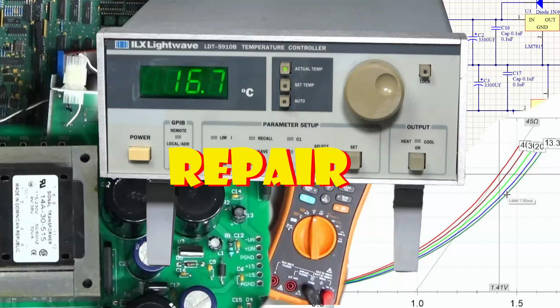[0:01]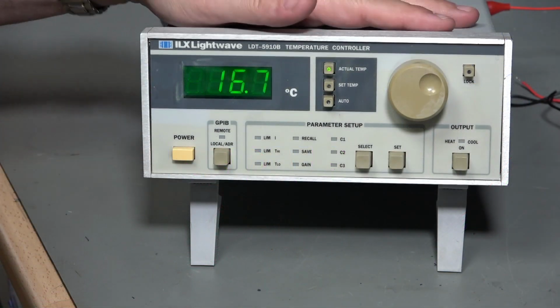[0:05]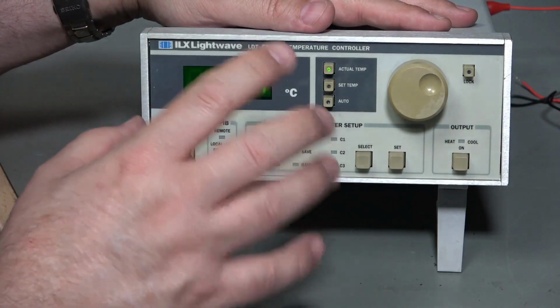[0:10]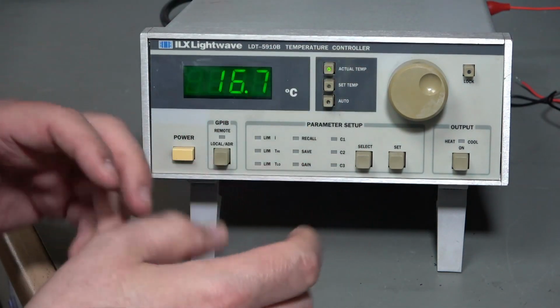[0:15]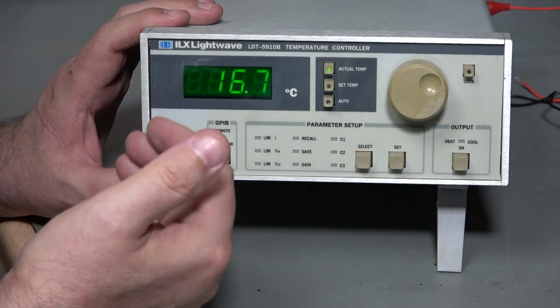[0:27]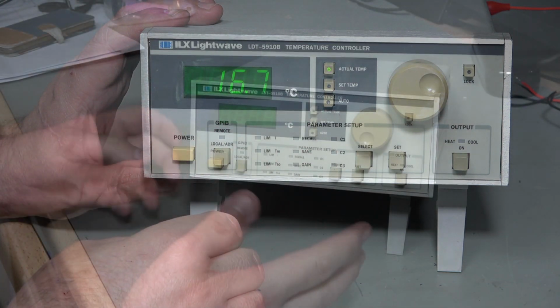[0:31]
This is the Thermo-electric Temperature controller that I opened in a recent mailbag video. As you can see, it's an ILX Lightwave LDT 5910B. So the idea is that you will have some lab equipment generating heat, maybe a laser diode or something like that, and you use this as a cooler or heater to stabilize the temperature at some set point. I just finished fixing it, and in this video I'm going to show you that repair, and then I'll do a little experiment testing the temperature dependency of a germanium PN junction. So let's get to it.
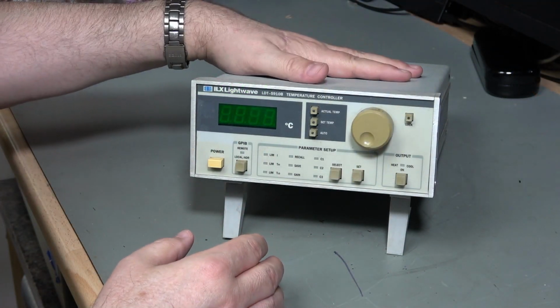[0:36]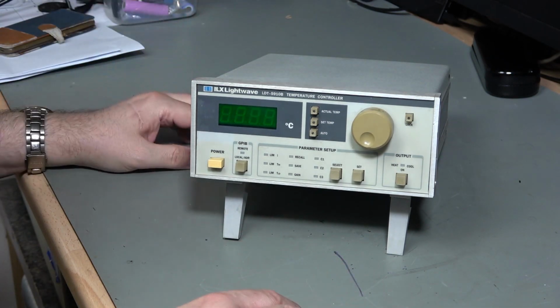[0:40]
Now this is dead on power on, so nothing happens at all. Whether that's because someone's messed around with it or whether it's because it's just a very simple fault, who knows, but we shall dig into it and see what we can find out.
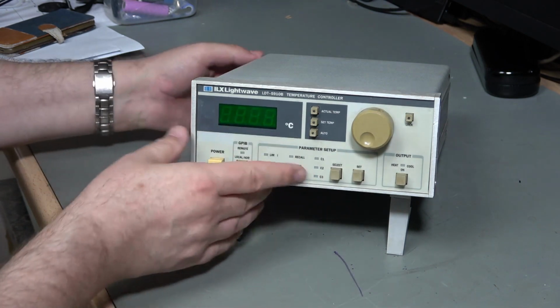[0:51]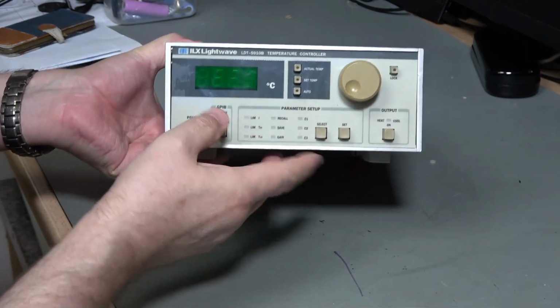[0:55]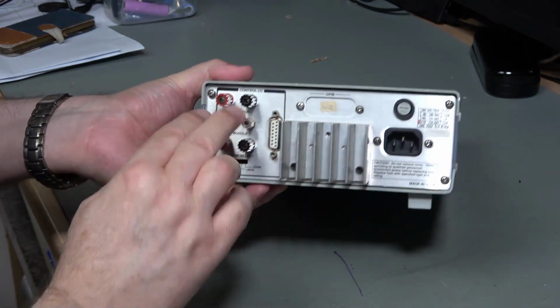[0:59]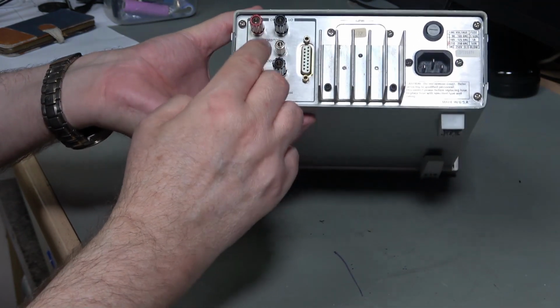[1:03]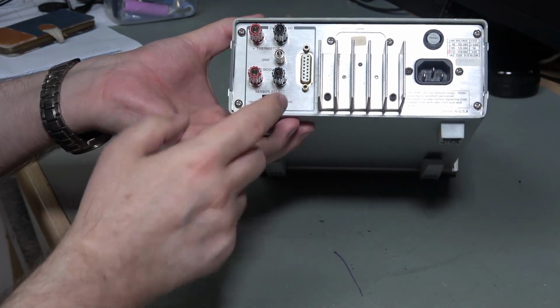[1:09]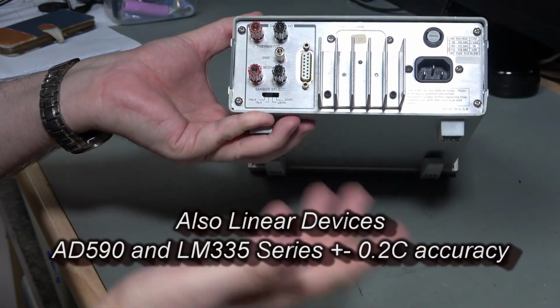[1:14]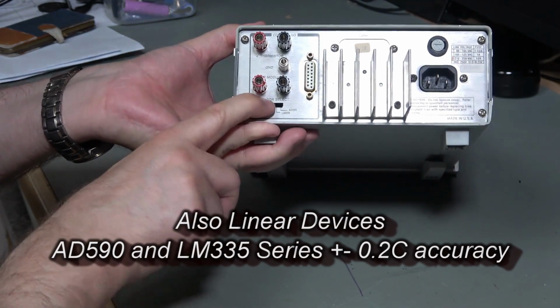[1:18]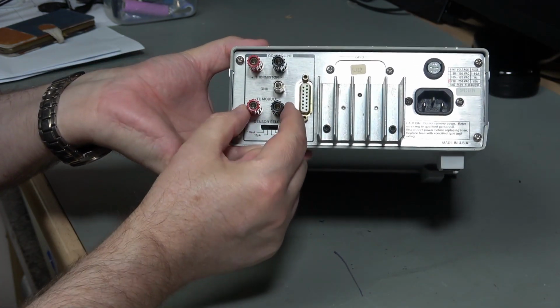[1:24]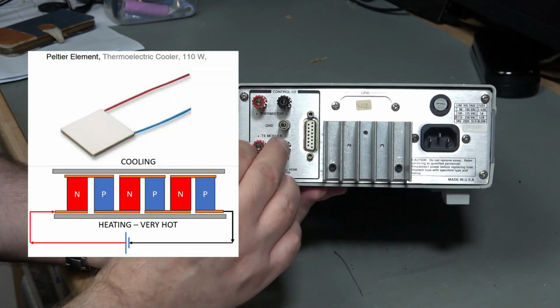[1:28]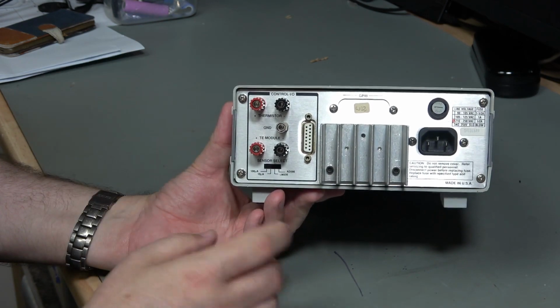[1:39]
The purpose of these really is to control temperature, as it kind of gives away on the lid, and on the back we have a pair of connectors here, or we can use this D connector to connect some sort of thermistor. Now thermistor is non-linear in nature, so an NTC thermistor onto there, and we can connect various sizes of thermistor, so 1K or 10K or 50K, whatever you want. We can control the current that's supplied to that thermistor using a switch here, and just here we've got something called TE module. So this is going to go off to a cooler or heater, so something like a Peltier device, where if you connect the power one way it warms up, if you connect it the other way it cools down, and it will essentially try and manage the temperature.
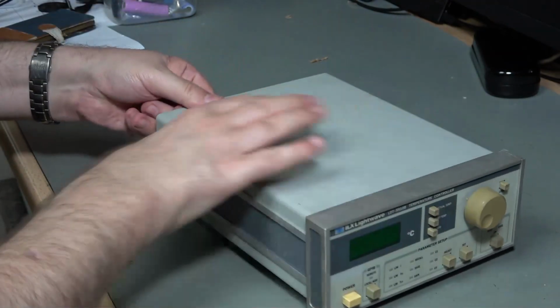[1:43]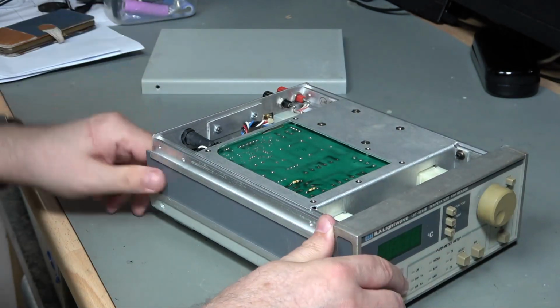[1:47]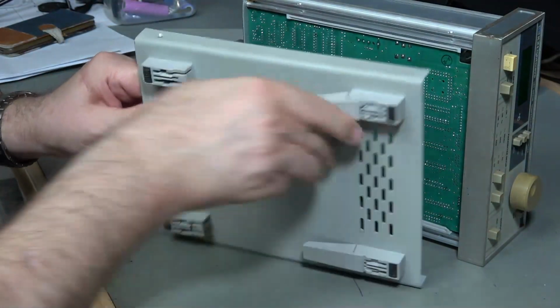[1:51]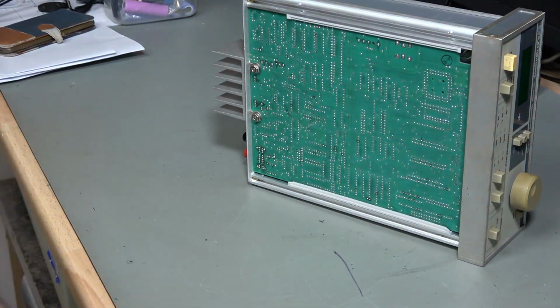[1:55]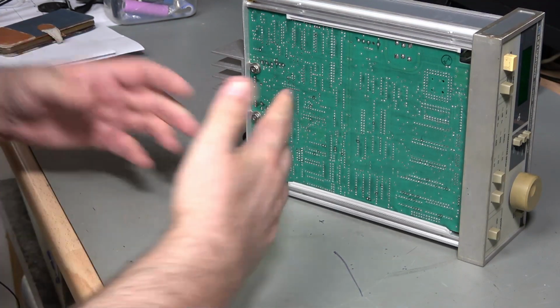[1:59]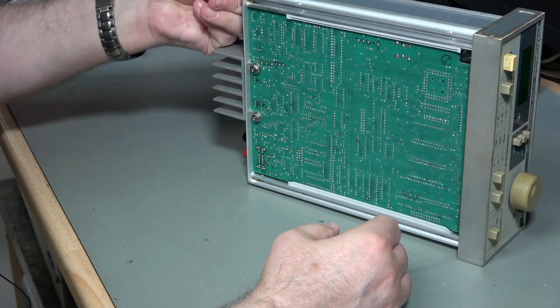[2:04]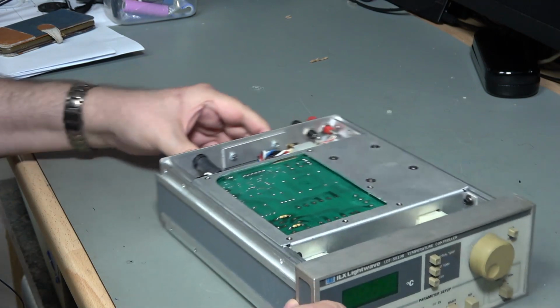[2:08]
So this should now just lever off. Oh, there we go. At the bottom, and yeah, we've got all the tilt feet and everything on here, so this is all good. And there's the bottom end access to our circuit board. Unfortunately, although I can find a user manual for this, service manuals are a different matter, but one thing at a time. Let's see if we can't figure out what's going on.
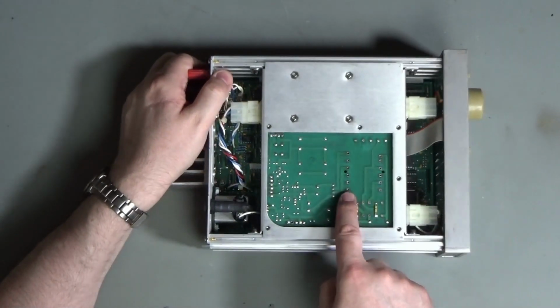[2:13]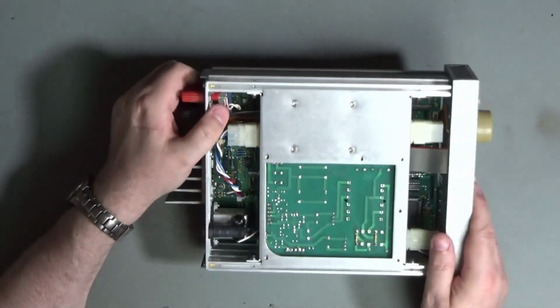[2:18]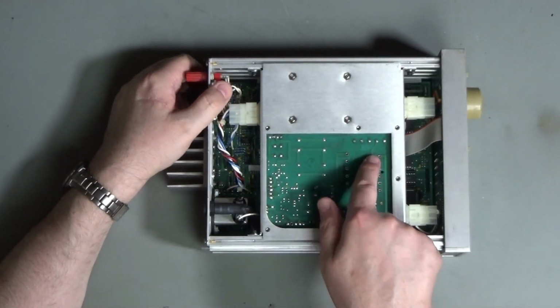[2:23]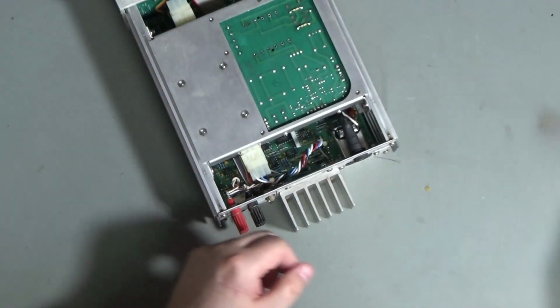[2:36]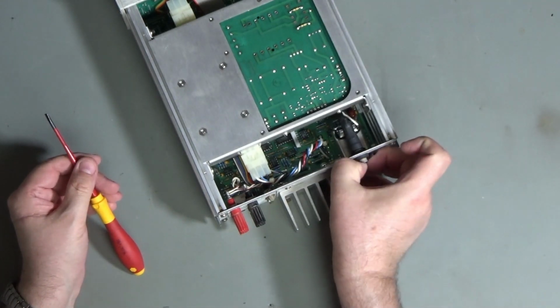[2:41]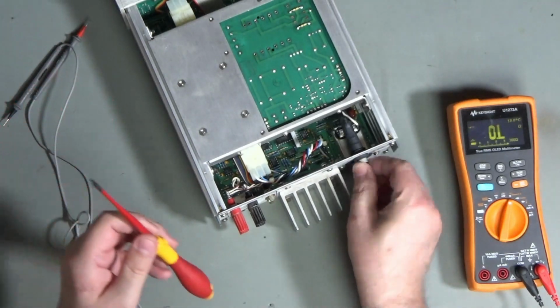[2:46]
And I am slightly concerned that someone may have removed a transformer from it, because I seem to have a lot of empty pads there, and there is some solder residue on them, although they don't look like they're horribly fluxy, but I'm guessing there should be a transformer right there. Oh dear. Okay. So, do I even bother to test very much more before I take that board out? Not really. Let's have a quick look at the fuse. Yeah, so the fuse is okay. So I'll just pop that back in before I lose it.
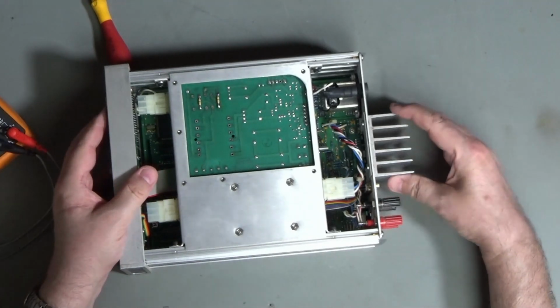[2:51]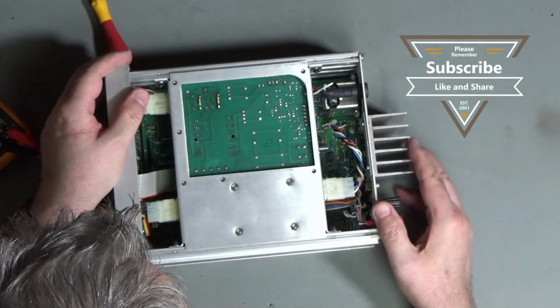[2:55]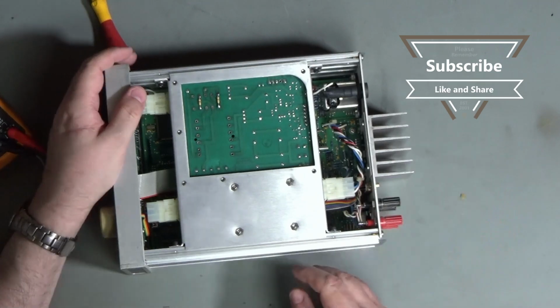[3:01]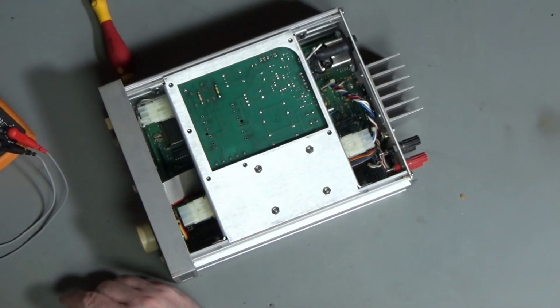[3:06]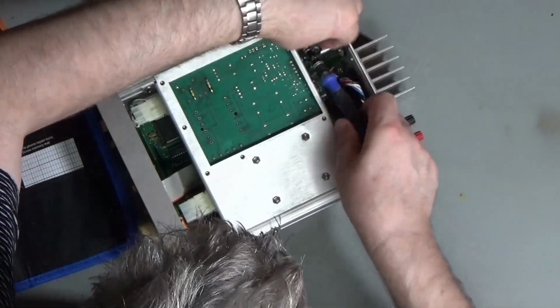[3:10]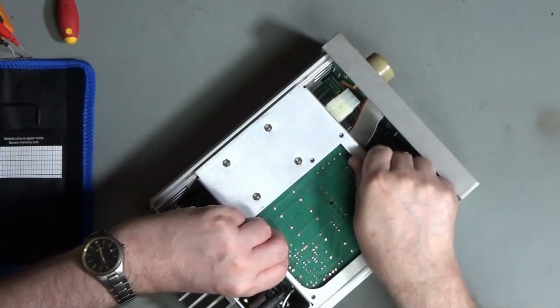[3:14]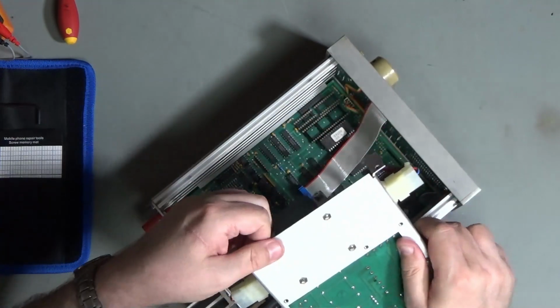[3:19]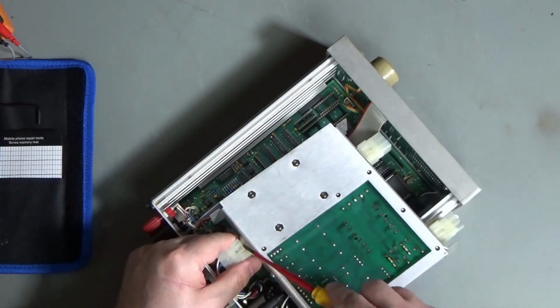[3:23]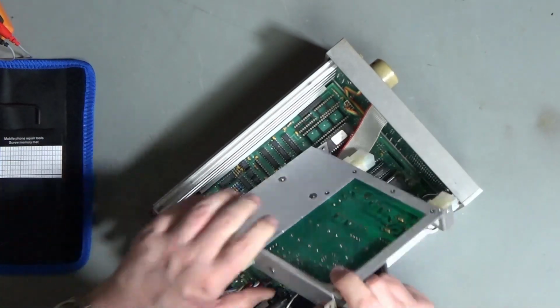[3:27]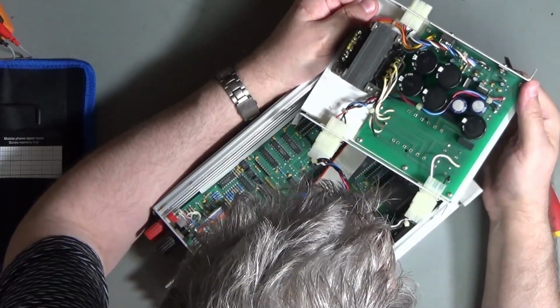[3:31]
Okay, I'm guessing this heat sink's here because this is a current source and it will source several amps. So there'll be some big MOSFETs or possibly Darlingtons on there, and there'll be a pair as well because it's bipolar. Right, let's see if we can't get in here and get these out. Awkward little clip. Okay, and there we have our power supply.
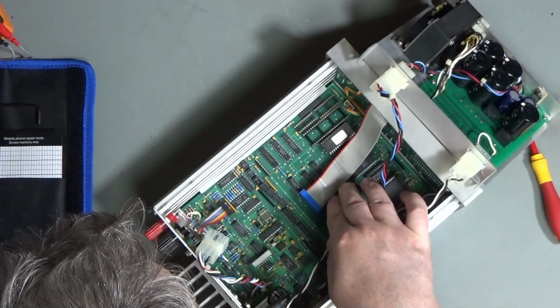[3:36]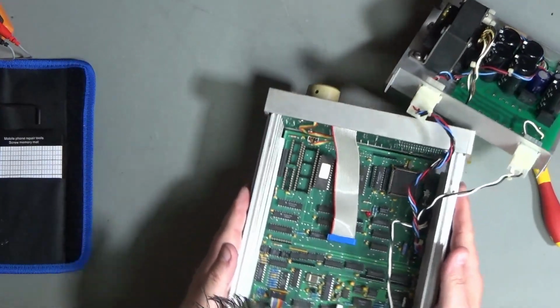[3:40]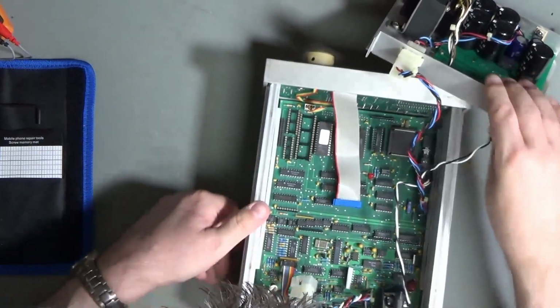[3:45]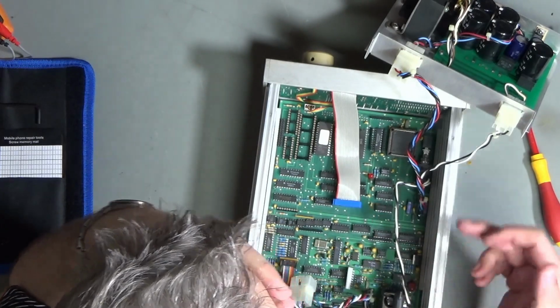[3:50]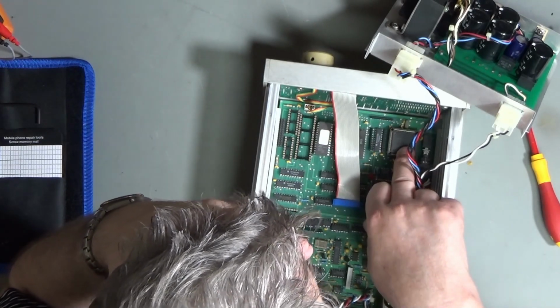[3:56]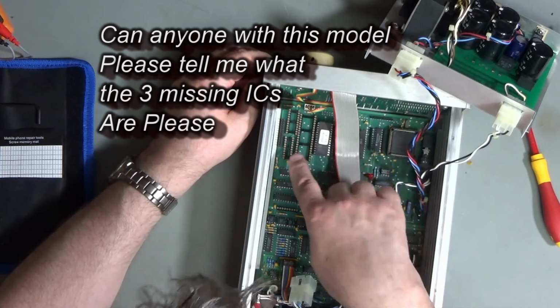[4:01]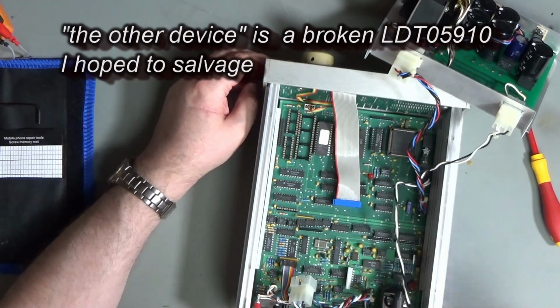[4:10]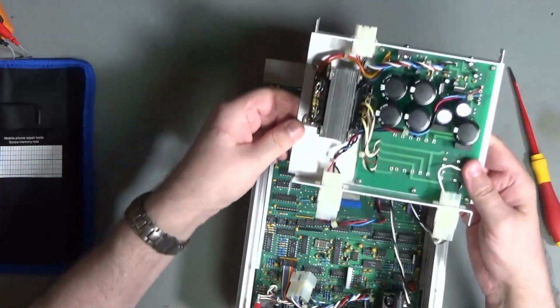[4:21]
So that, I think, is kind of like our analog section with its digital drivers for switching. And then we've got our digital section over here, and we've got our processor here. It's a 80C188 is what it says. We've got 3 missing ICs down here, and I'm kind of hoping they are the GPIB, because the other device has a very large GPIB card, which actually sort of fills half of this case, and clearly that's not meant to go in here along with this power supply.
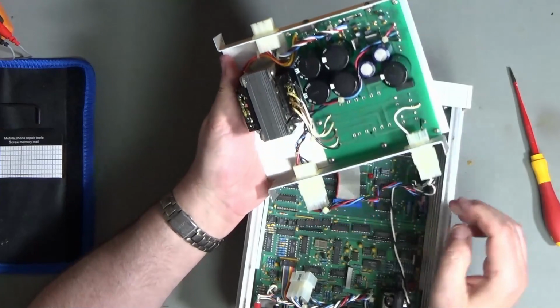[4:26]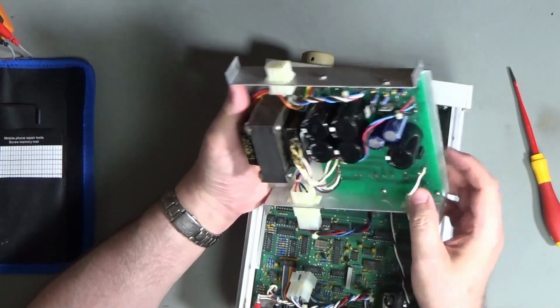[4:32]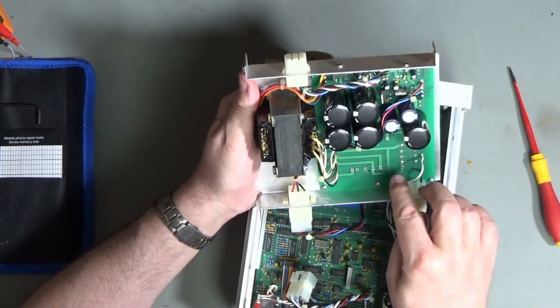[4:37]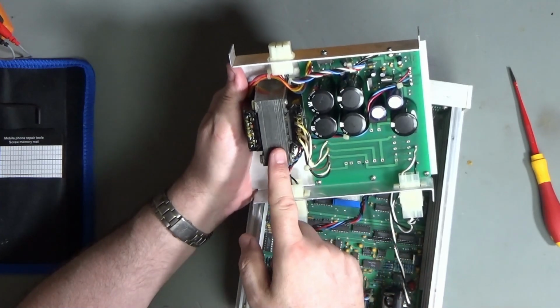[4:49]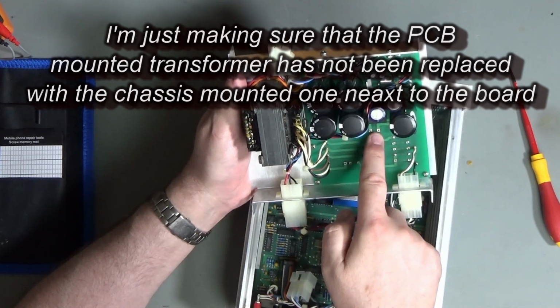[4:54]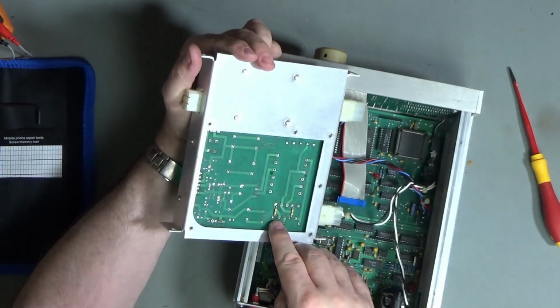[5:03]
Let's take a look at the power supply for just a second. So we've got our mains coming here on the black and white, and I'm assuming that these are supposed to be jumpers. That's a 24120 jumper, and this is a 24220, so that'll give me 240. I think that's how that's supposed to work. It runs through to this transformer here. But we've got an entire transformer section just here. It appears to just be missing completely. Yeah, there are 0 ohm jumpers on the back.
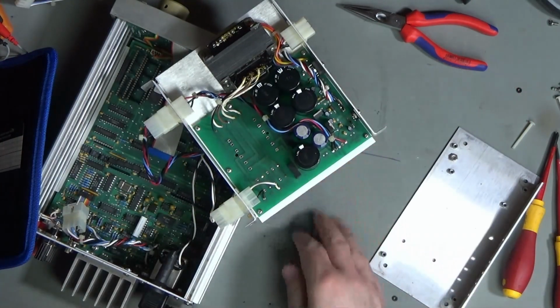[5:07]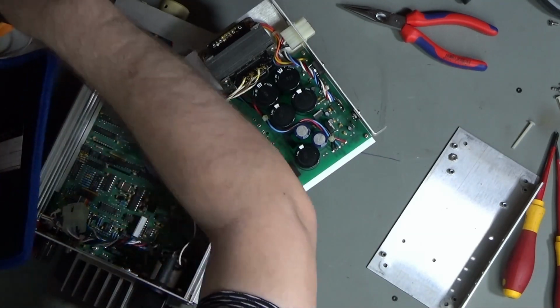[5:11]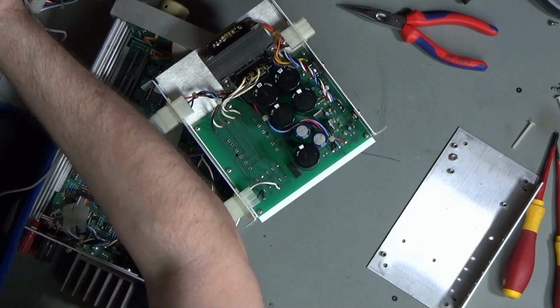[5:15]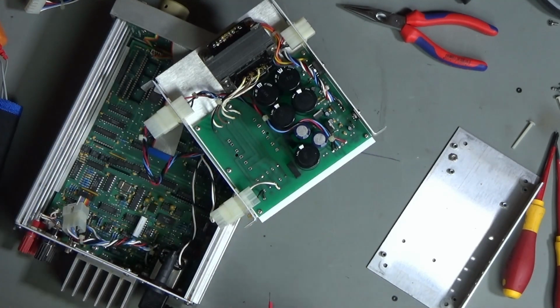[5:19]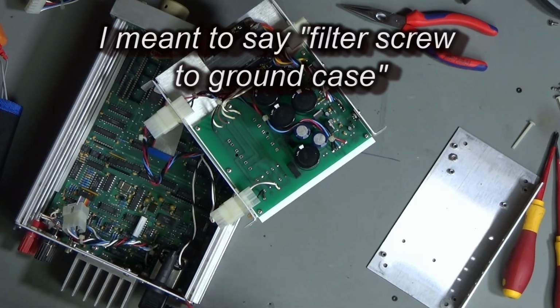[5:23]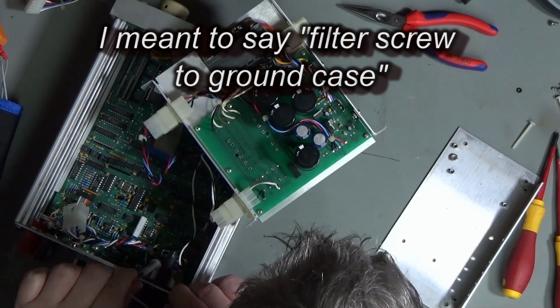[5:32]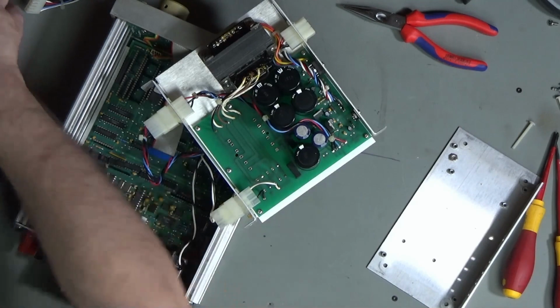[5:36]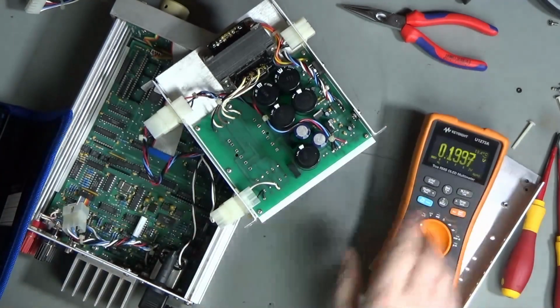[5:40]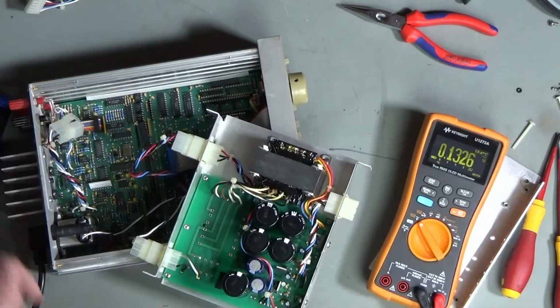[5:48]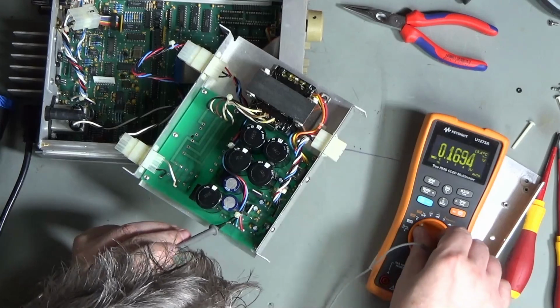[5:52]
Okay, let's start off then with volts AC. A quick probe around. So they appear on this filter to be just relying on the case screws to hold that together. Volts AC, yes. 241, 242, yep, that's fine. Just as expected, really. And then that's our primary on this side. So let me just turn this around so that my hands are away from nastiness. And we need to turn to volts DC.
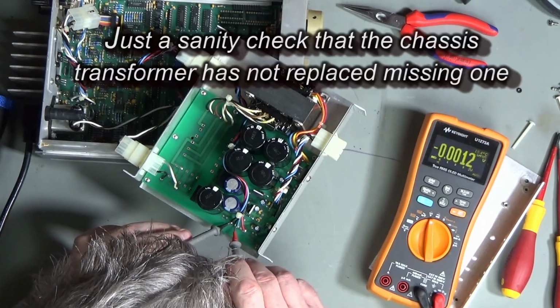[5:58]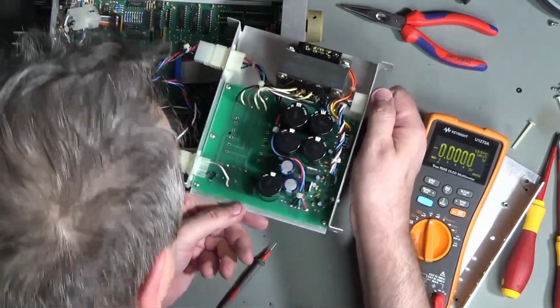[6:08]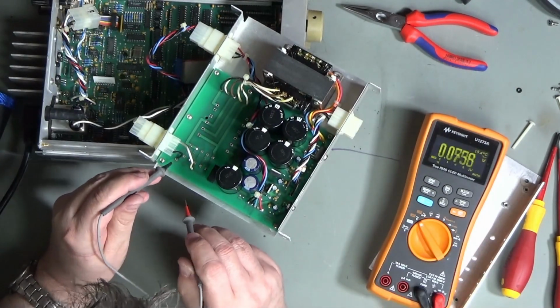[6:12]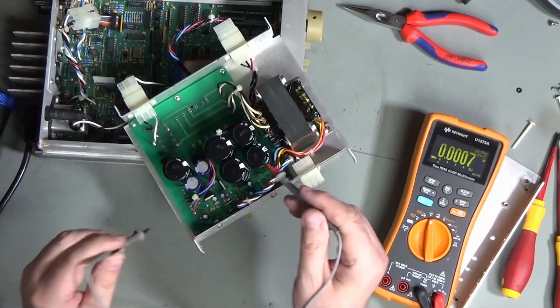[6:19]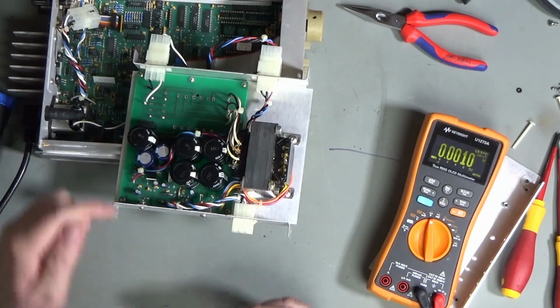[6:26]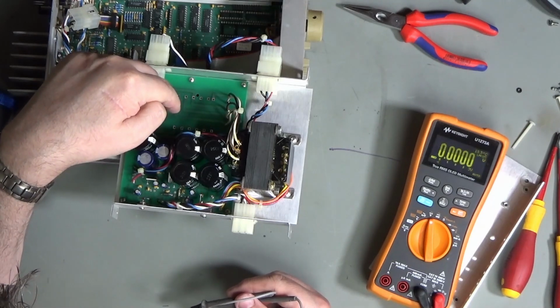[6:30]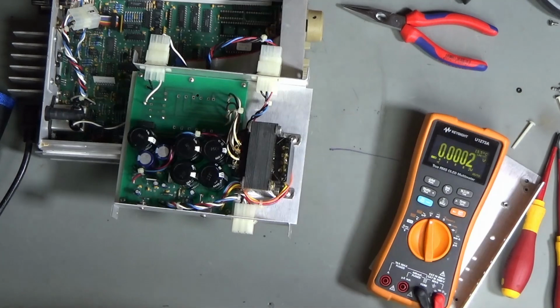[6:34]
And so kind of as expected, we're not getting anything on any of those. Back to AC, and we'll just check the power's getting to the board, which it is. So we've definitely got no inputs coming into those, so yeah, we're definitely in the world of transformers. But actually that might not be too bad, because that therefore isn't the big heavy current source.
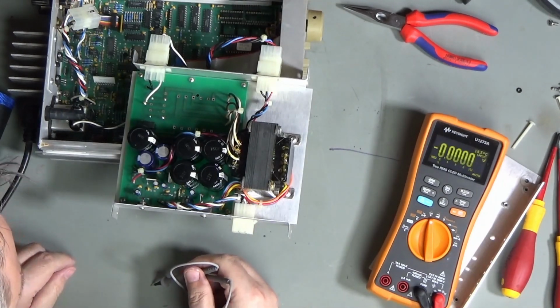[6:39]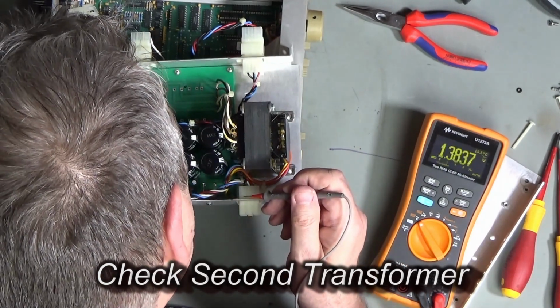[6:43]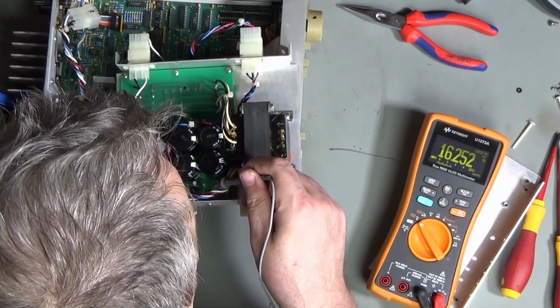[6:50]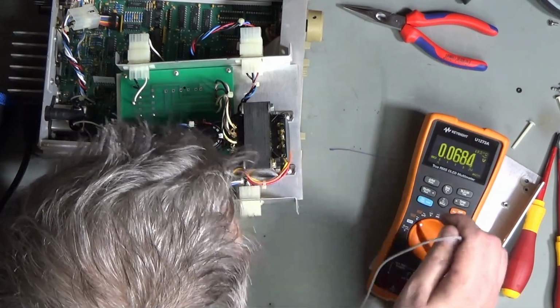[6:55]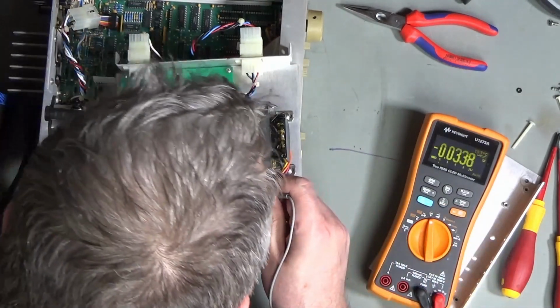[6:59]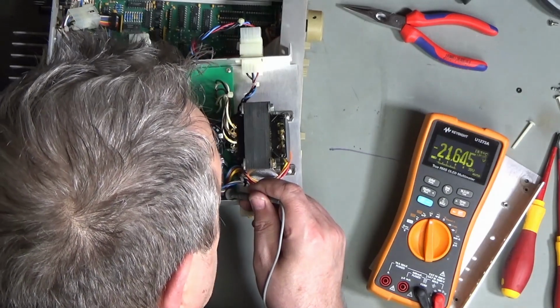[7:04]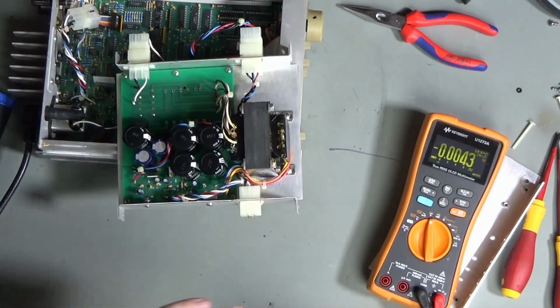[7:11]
Rectifier is diagonally opposite its connections. There you go, we've got 16 volt AC coming in there. That's nice. Now can I get the other way around and get the DC voltage? Yeah, minus 21, but anyway, nearly 22 volts, so that's okay. So that seems to be my unregulated supply then.
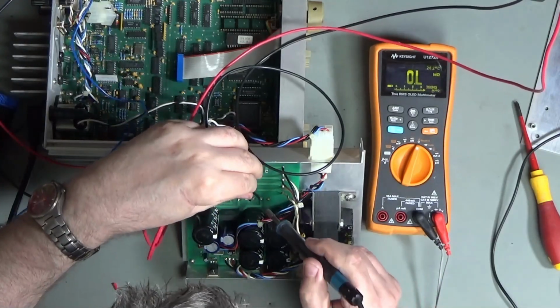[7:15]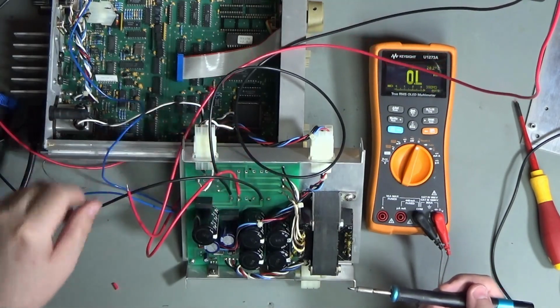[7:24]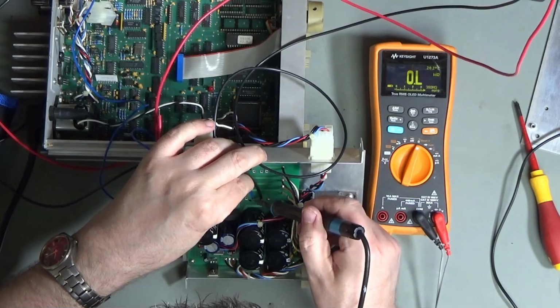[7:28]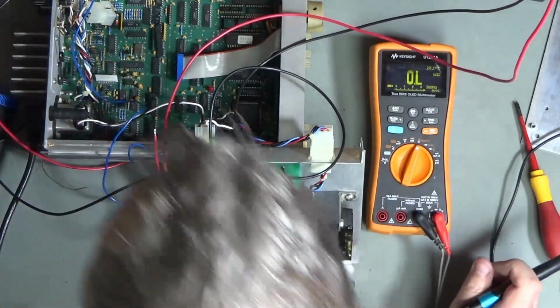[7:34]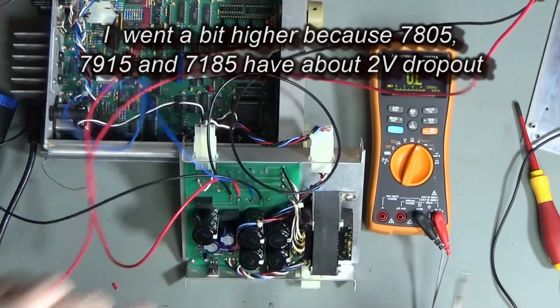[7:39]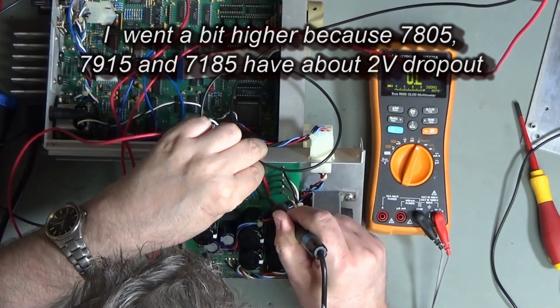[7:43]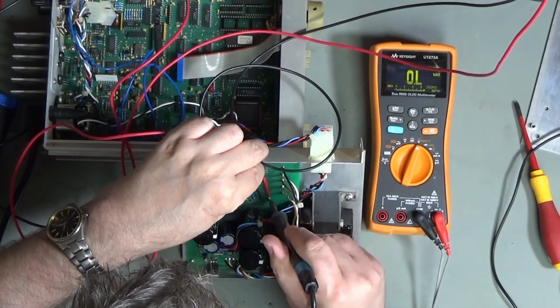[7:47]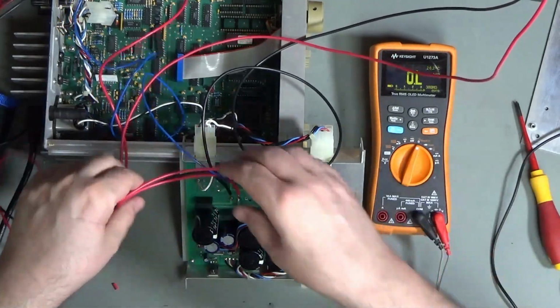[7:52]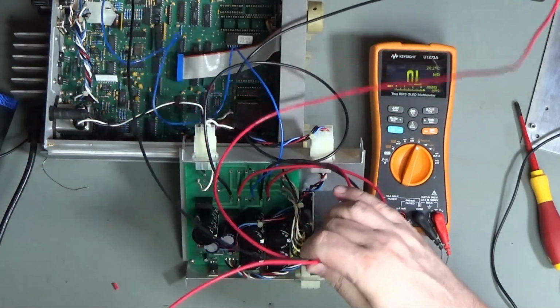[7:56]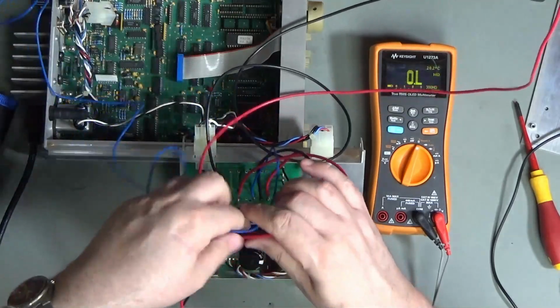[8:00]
So let me think. I want to see whether or not there's any life in the rest of the components on this power supply, and also it'd be really good to get some voltages onto the board. So what I'm going to do is solder some wires on in place of the transformer, and I'm just going to inject some voltages. So about 7 volts for the 5 volt side of things, and plus minus 17 for the 15 volt side, and they're just a little bit higher because of course there is a bit of voltage drop in the bridge rectifiers, and then we'll see what happens when we get that transferred onto the main board, whether there's any life in this at all, because I don't want to go to the expense of doing a complicated transformer repair if actually there's no hope for the main board. So let's just see how it goes.
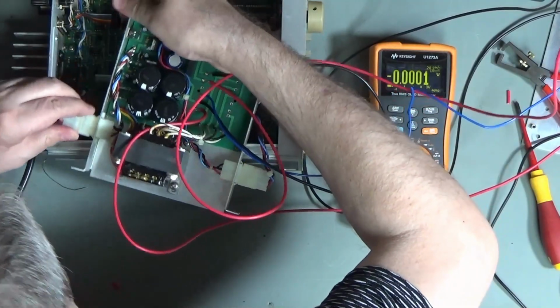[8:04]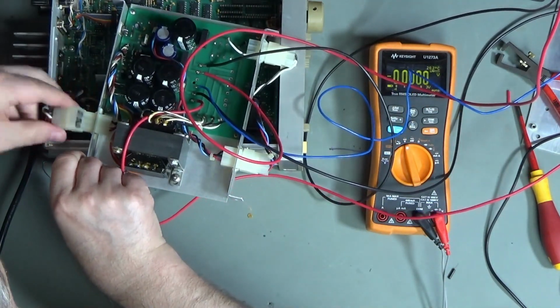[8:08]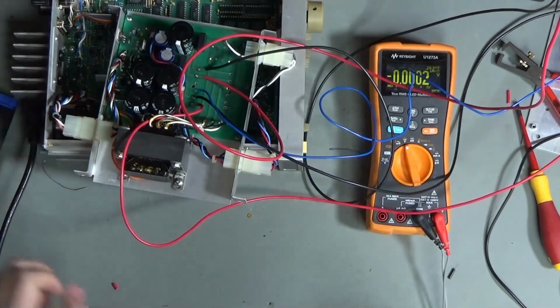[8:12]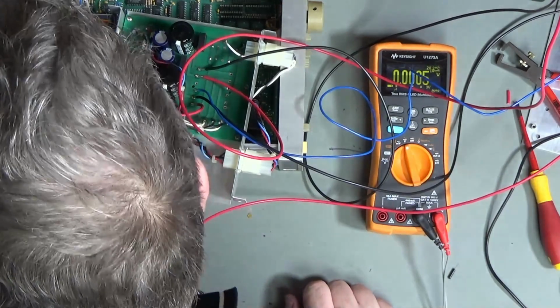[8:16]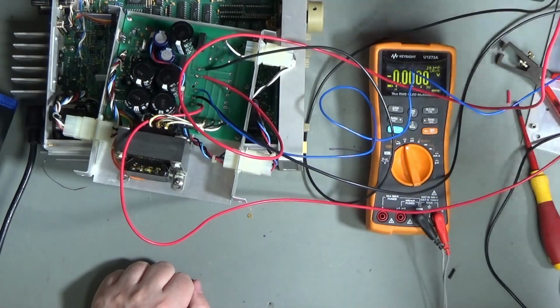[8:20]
I've got this the right way now. Just double check. Yes, that's the tab. Right. Here we go then. So let's turn on mains power first. That's the unregulated supply. And then we'll turn on our 12 volt supply. And then we'll turn on our 5 volt supply. And oh!
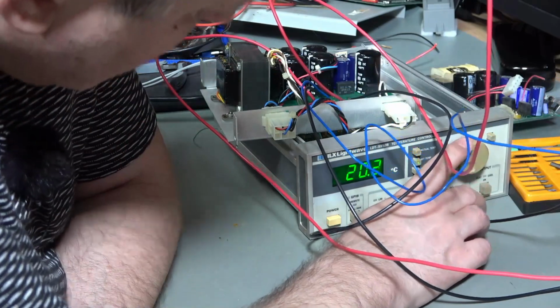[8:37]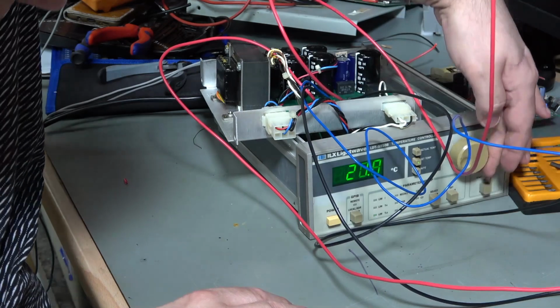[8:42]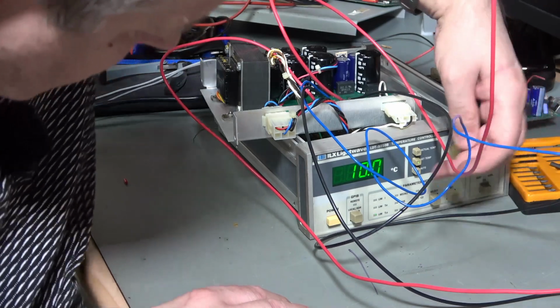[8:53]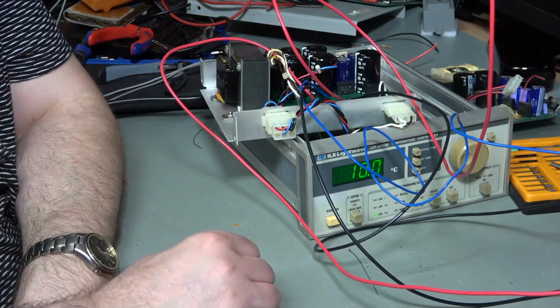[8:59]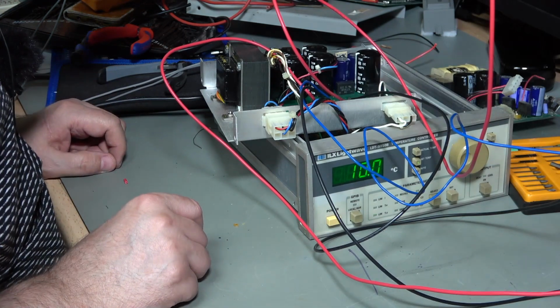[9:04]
Well, we have something very different working there. Oh, look at this. Something's happening. And yet we can actually set the temperature by just dialing the dial. So I think this is feeling like it's worth pursuing. I don't know why it won't go below 10. Oh, I think I've got a limit set as to how low it can go. Okay, so there still might be some problems around that. I need to read the user manual to set everything up, and of course I haven't measured whether or not we can output anything.
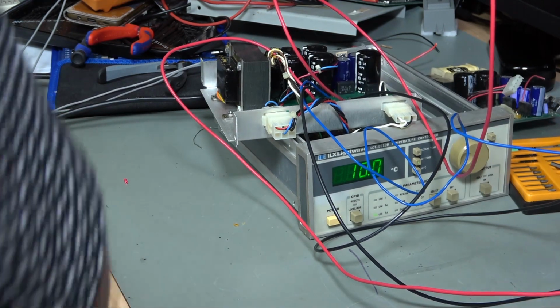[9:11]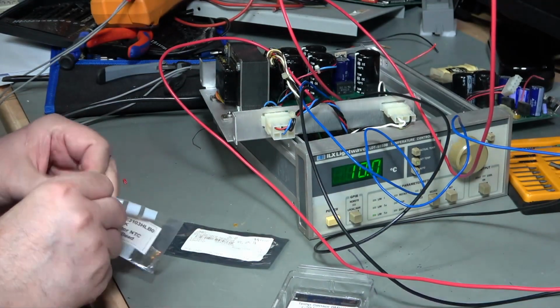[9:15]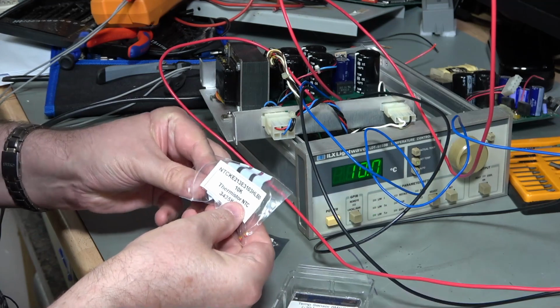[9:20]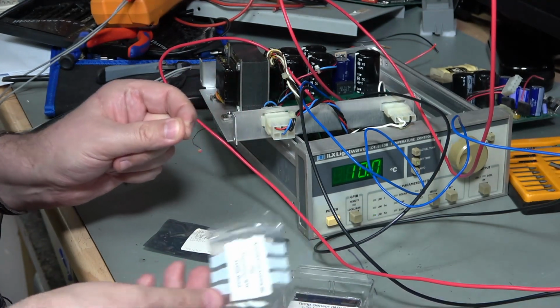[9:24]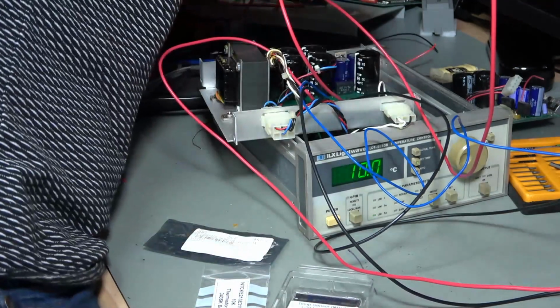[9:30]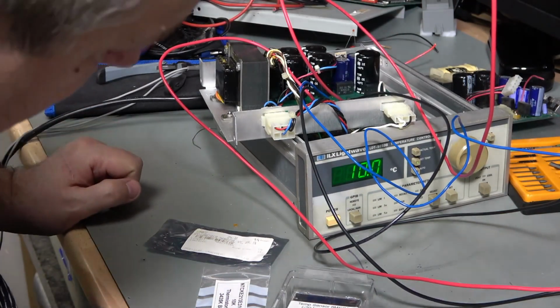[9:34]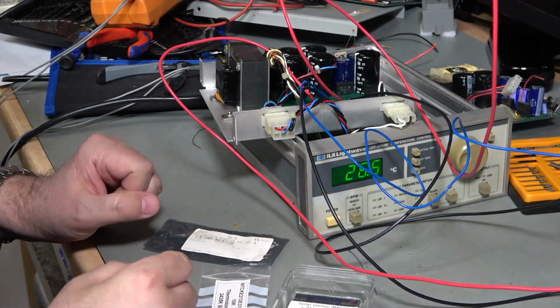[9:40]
Let's see if I've got a thermistor. Okay, so I found a few thermistors in my drawer. This is an NTC 10K resistor, and I'm just going to attach that to the back and see what happens. Okay, so I've attached the thermistor, and there we go. Here's an actual temperature reading. Of course, I've just had that thermistor in my fingers, so it's cooling off. Let's warm it up a bit. There it is. Perfect. So it's definitely measuring temperature on that thermistor with no problem at all.
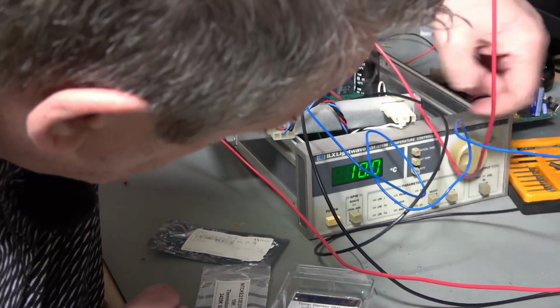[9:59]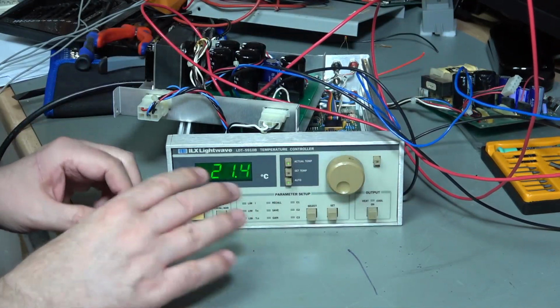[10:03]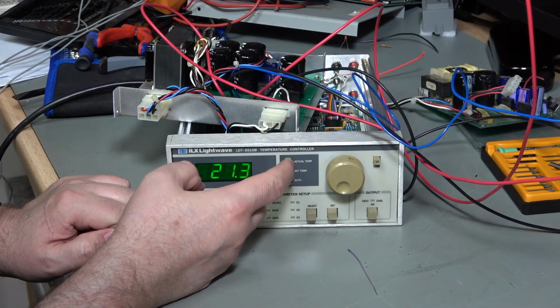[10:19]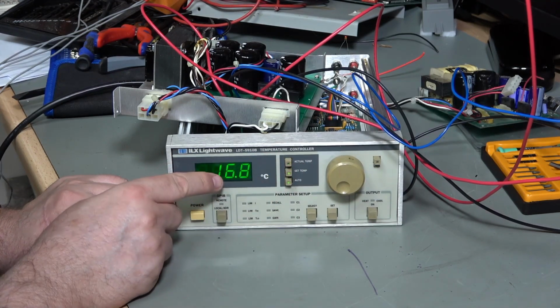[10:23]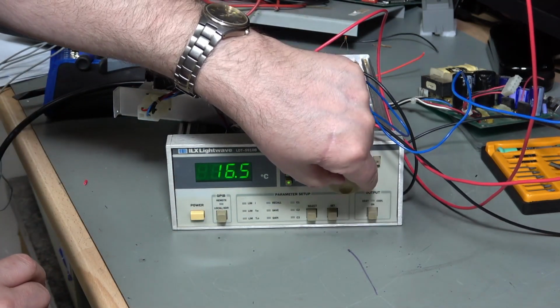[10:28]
So if we set our temperature, okay, so I've tried to tidy the wires out of the way. So I'm reading a room temperature of 21.4, which sounds around about right, to be perfectly honest. It might not be right because I haven't calibrated this specific thermistor. And let's have a look. So that's my actual temperature just there. It's running in auto. If I click set temperature, we've got 16.8, and I can change that, of course, just by dialing in a new temperature. I can go down as low as 10.
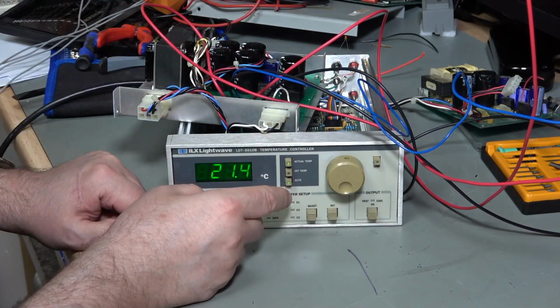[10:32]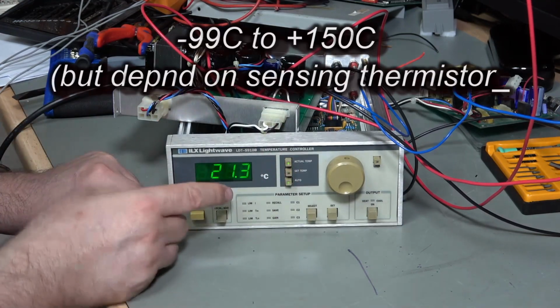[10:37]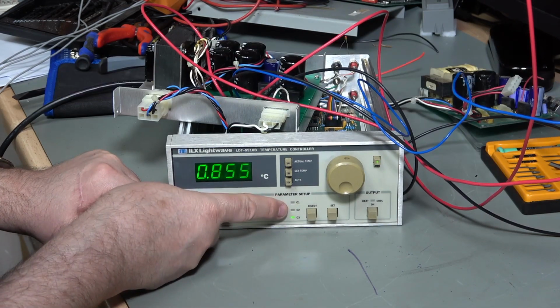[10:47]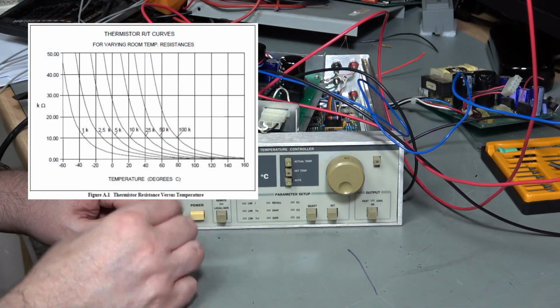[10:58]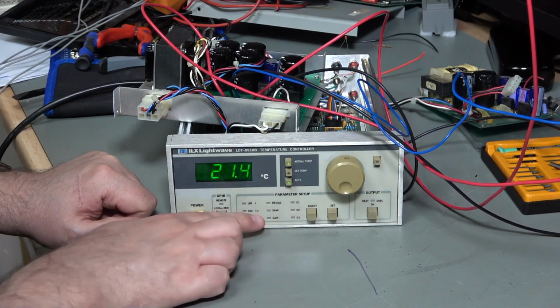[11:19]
Now, why is that? Well, I'd like to go lower than that because this should go down to minus 40, minus 50 or something. Well, if I press the select button, we can see we've got gain, and then we've got C1, C2, C3. So C1, C2 and C3 are coefficients applied to the thermistor, because it has a curved, non-linear output of temperature versus voltage, or temperature versus resistance. So that's kind of what these C1, C2, C3 are for. They're to put in different points on that graph, so we've got different coefficients in the equation, and we create a different curve to match the actual thermistor that we're using. So that's absolutely great. I'm not going to do that at the moment.
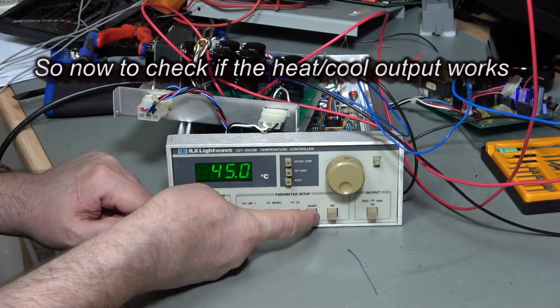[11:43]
The other thing I can do is I can limit the current, and this is 0.3 amps. So this is how much will be provided by the output to the heater or cooler. At one button, I can also do limit TH, so that's limit temperature high, and one button, limit temperature low.
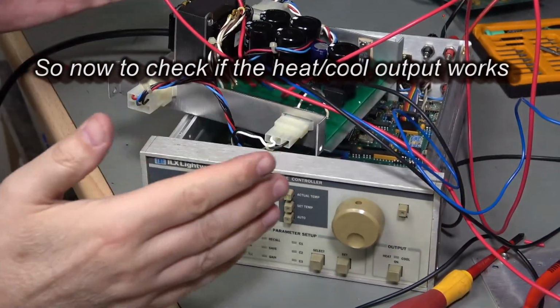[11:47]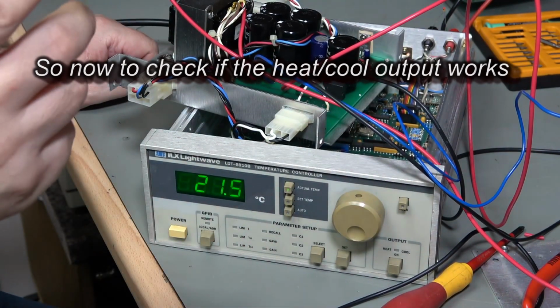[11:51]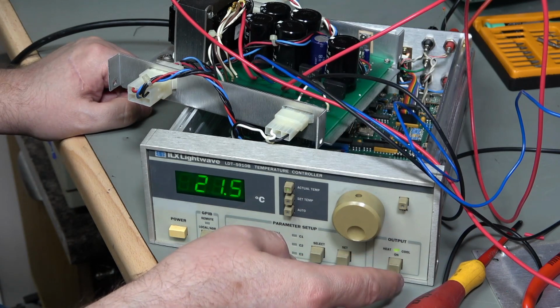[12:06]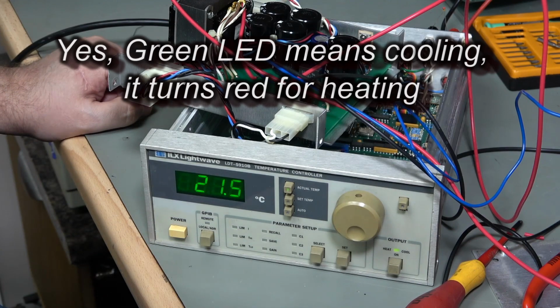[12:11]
Okay, so I've set up my load to 0.3 amps, which is what this is supposed to be limiting to. My actual temperature is 21.5, my set temperature 15.4. So what should happen is this should cool. And I'm delivering 0.3 amps. And that's it, it's just delivering 0.3 amps. 0.298 is what it's actually delivering.
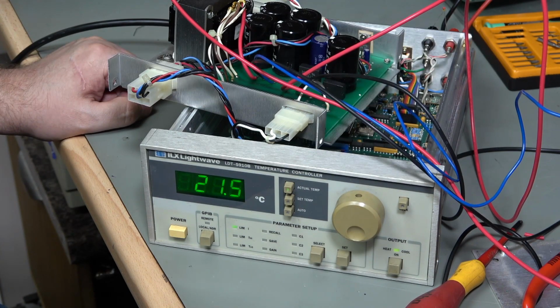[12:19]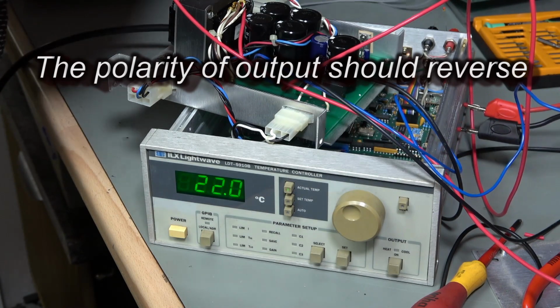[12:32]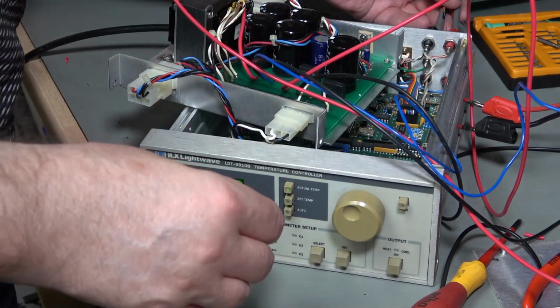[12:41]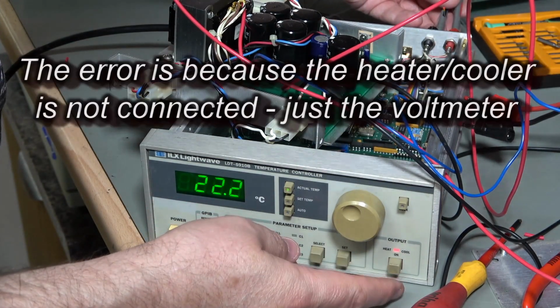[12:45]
So I've got a set temperature of 24.5 now and an actual of 21.8. So I'm actually expecting this to work the other way around. Let me connect up my voltmeter and just double check that. It'll only work for a pulse, won't it? But it should give me long enough. Yeah, minus 10 volts. Okay, so I will connect my load up backwards.
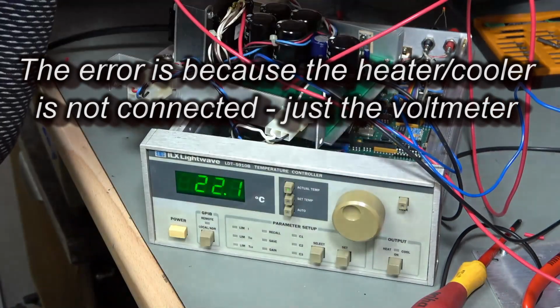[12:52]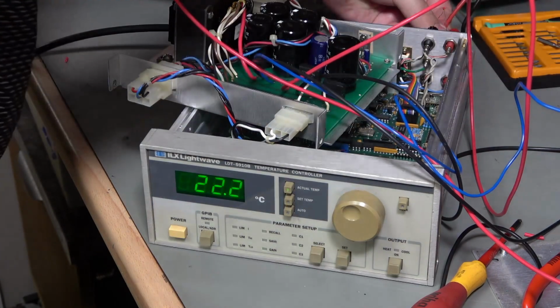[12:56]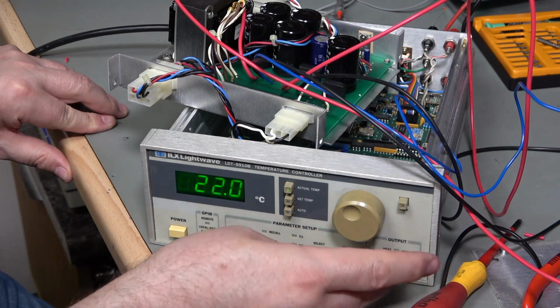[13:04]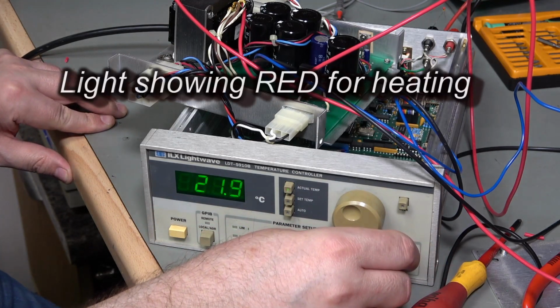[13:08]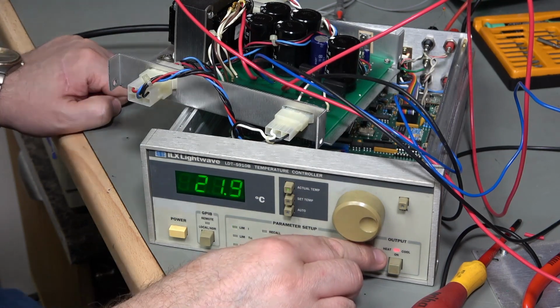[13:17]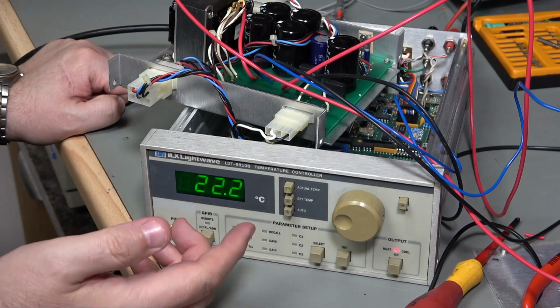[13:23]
Yeah, I'm drawing 300 milliamps. So I've got this showing red this time. That's showing red for heat because I've got a set point of 26.4 and my actual temperature is only 21. So if I warm this up, oh yeah, my current's falling and it's gone. And we've switched instead to a yellow colour, which presumably is cool, and now we've gone back to heat. Fantastic, that is working absolutely spot on.
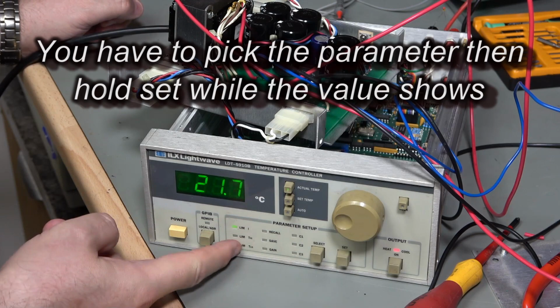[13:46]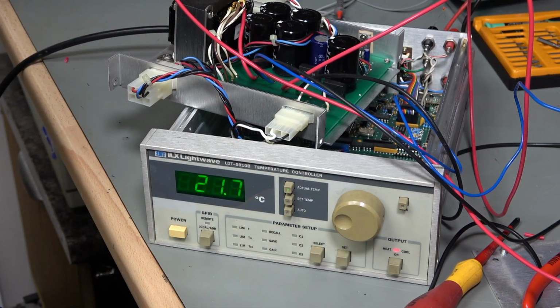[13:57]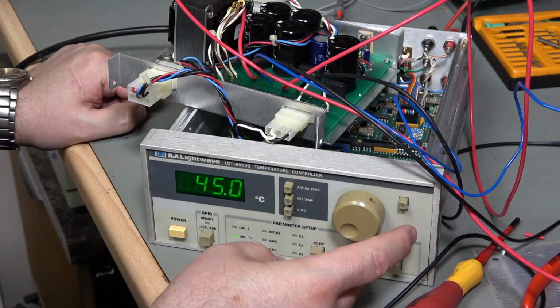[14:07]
What I don't seem to be able to do is to program these parameters just here. So I need to have a little look in the book and see if I'm doing everything right. But generally speaking, if I can find a suitable transformer, then I will be laughing. If I can't find a suitable transformer, what I might have to do is to do a little patch, make a patch board, mount some other transformers on it, and go from there.
Oh, there we go, got it. That's how you do it. Actually hold the button down. Right, okay, so if I select limit I, hold that button down. Oh yeah, there we go, look. Superb. Let's set it to 1 amp then. Now I shouldn't be able to deliver 1 amp because my load is only set to a little bit less than that.
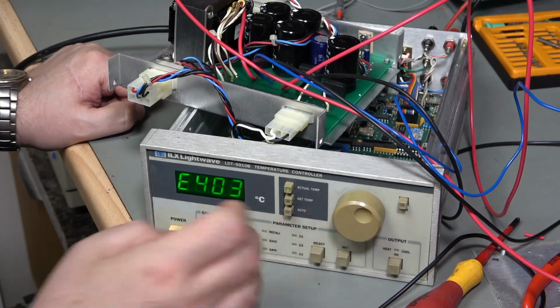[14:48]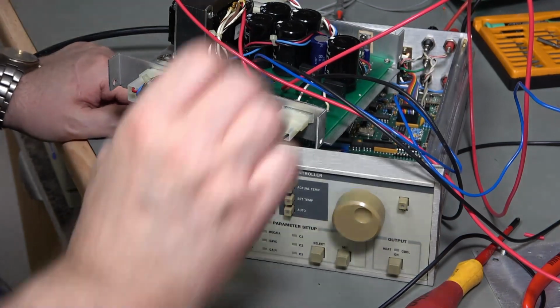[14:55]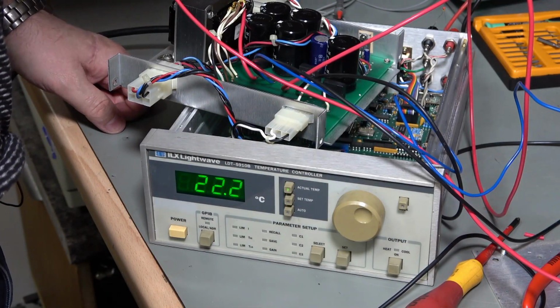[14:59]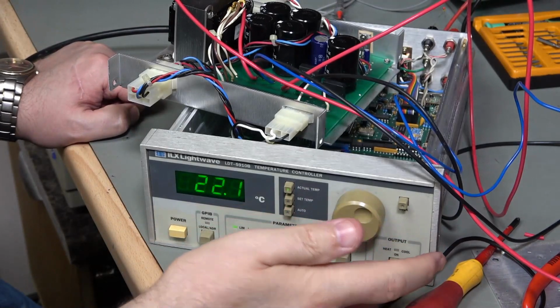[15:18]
Let me set my temperature. Make sure that's nice and high. Check my actual temperature. Yeah, turn on the heater. And the heater has failed to be able to deliver its current. I think that's what that error means. So if I set my current to wish to draw constant watts, I'm going to try and draw 20 watts. I'm delivering 1.016 amps.
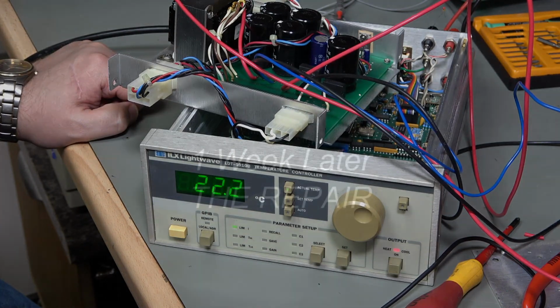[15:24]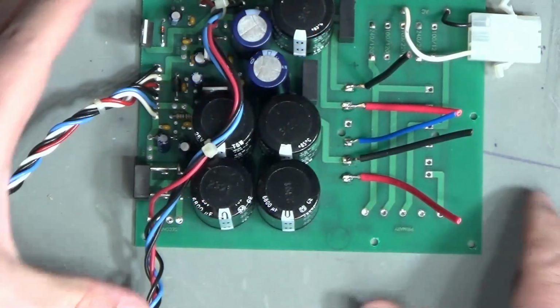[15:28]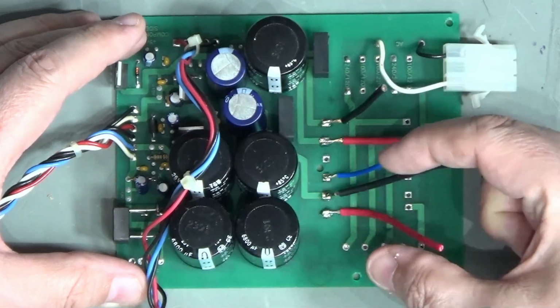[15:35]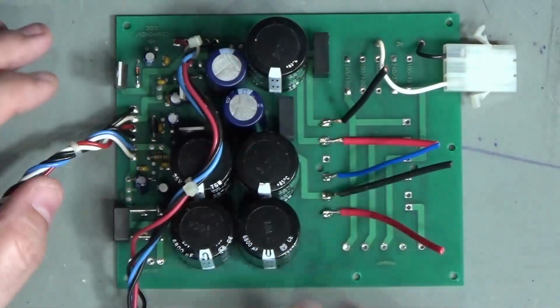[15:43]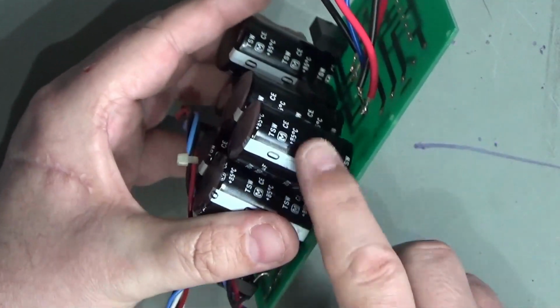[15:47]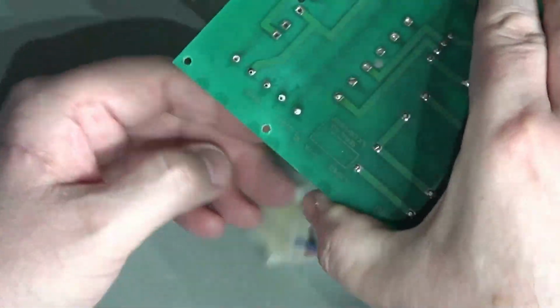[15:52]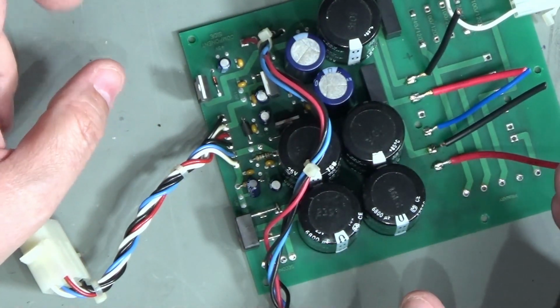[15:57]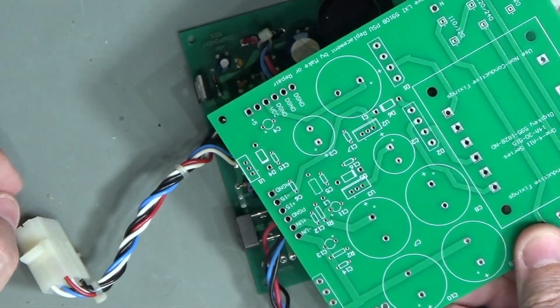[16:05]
So one of my thoughts was that I could make a piggyback board that would sit on here, and I'd put a small 5-volt transformer and a small 15-0-15 volt transformer on here, or 6 volts and a 15-0-15, and that would provide all the voltages that I needed. And I was going to go with that until I realised that I am actually a little bit limited because this hangs upside down inside the main chamber. Yeah, I am actually a little bit limited for space. So I figured that what I would do instead is make a completely new board.
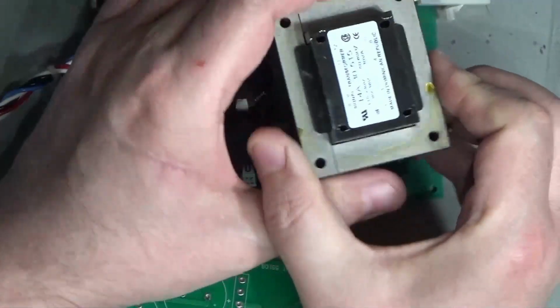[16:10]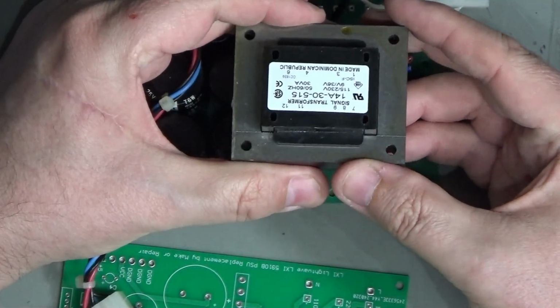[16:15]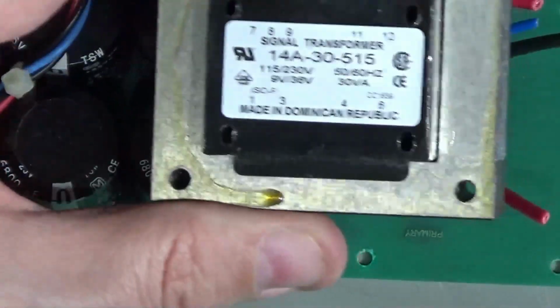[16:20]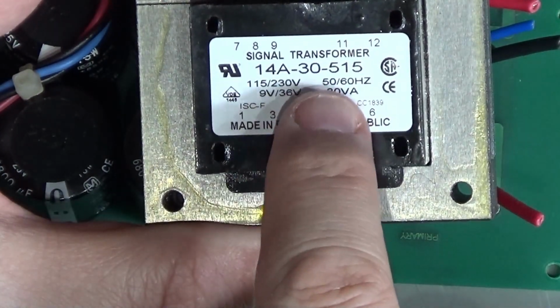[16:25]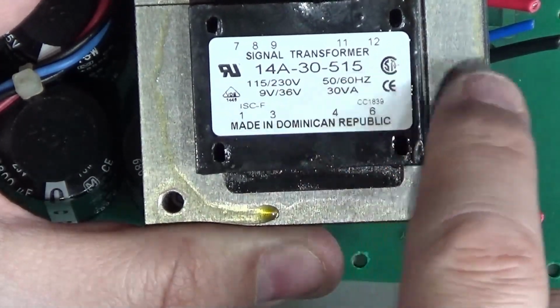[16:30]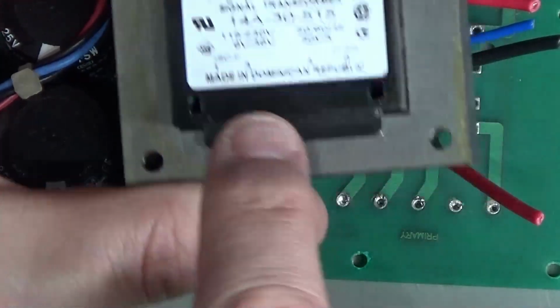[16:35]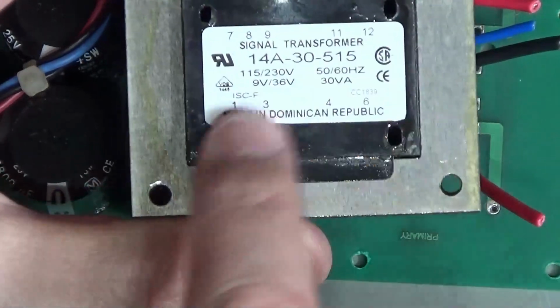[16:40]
Now, I did almost find a transformer that almost fits on here. So here's the transformer that I found. Hopefully you can read that part number. Let's try and get it the right way up. So here's a transformer that I found. Now, this is 30 VA, 5 volt and 15-0-15 volt. So on this side we've got 5 volts, this side we've got 15-0-15, and then we've got split mains for 240 or 120 volts, or 110, 120, whatever you want to call it.
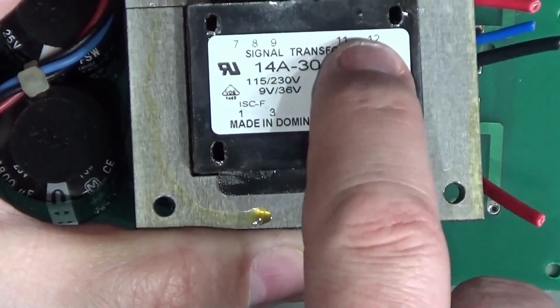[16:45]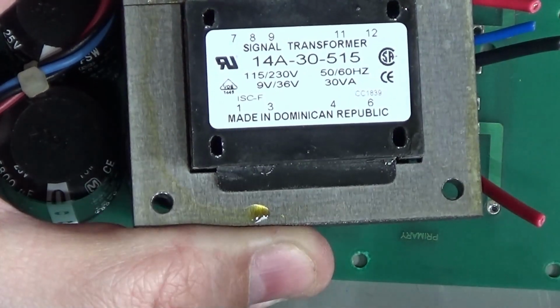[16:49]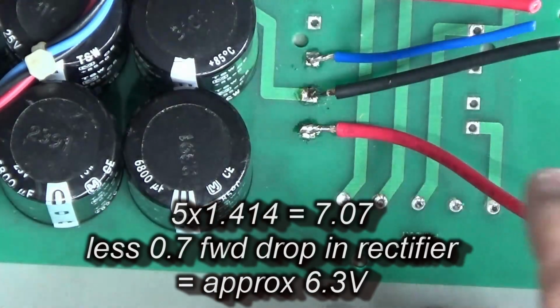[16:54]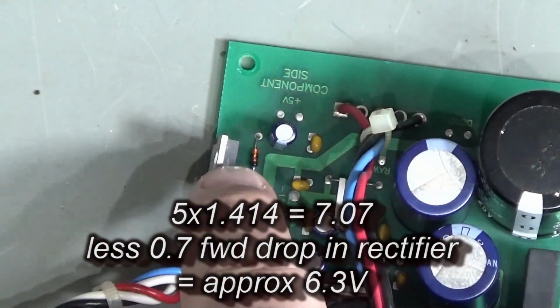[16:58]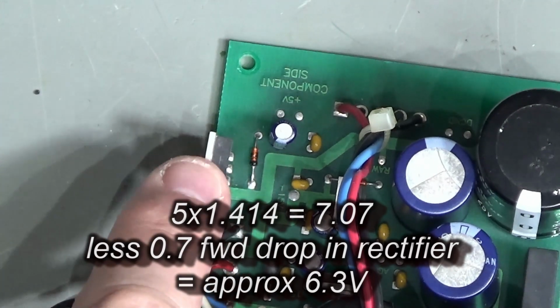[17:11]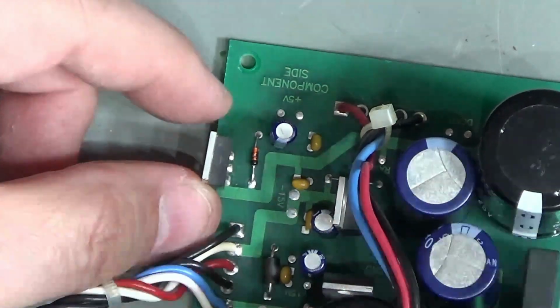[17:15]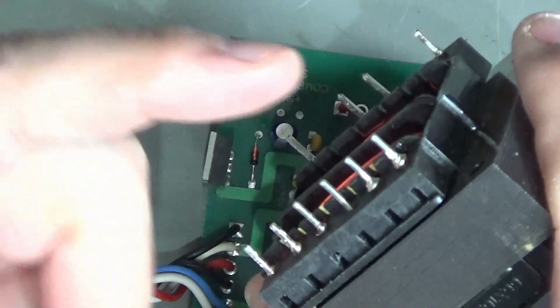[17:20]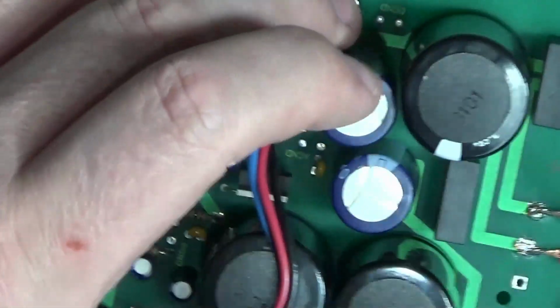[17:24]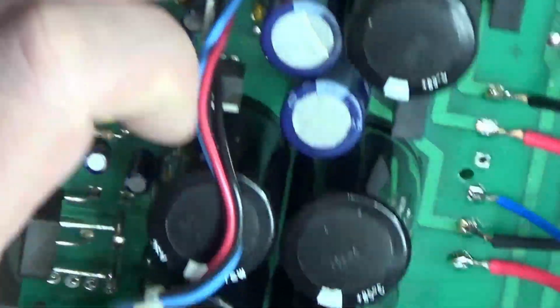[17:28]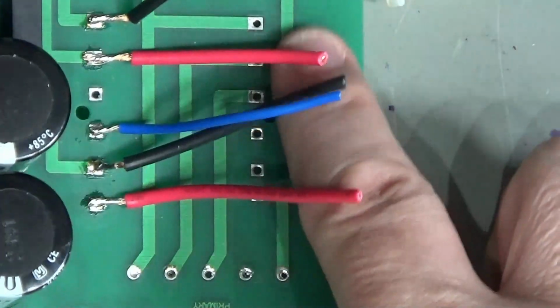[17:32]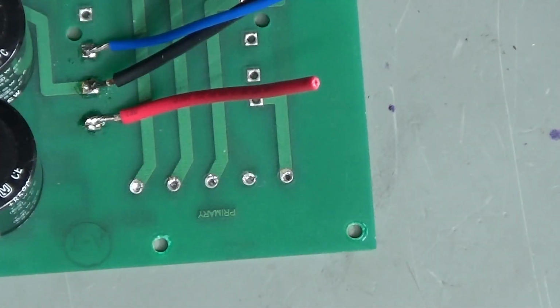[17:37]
Now, this being a 5 volt secondary instead of a 6 volt secondary meant that when I did the maths and worked out whether it would work with the 7805 that's sitting on this board just here, this 7805 at roughly 300 milliamps, which is what we're drawing, has got close to 2 volts drop. So 5 volts multiplied by 1.4, less the drop, and that will not be regulating correctly. So I need to replace that with a different type of regulator. Unfortunately, although the pin out is in the right order on this, the pin pitch is not quite right. So I can't just literally drop this on, unfortunately. And on the primary side, this has got more taps than I'm using. So yeah, I would have to do quite a lot of nasty bodging.
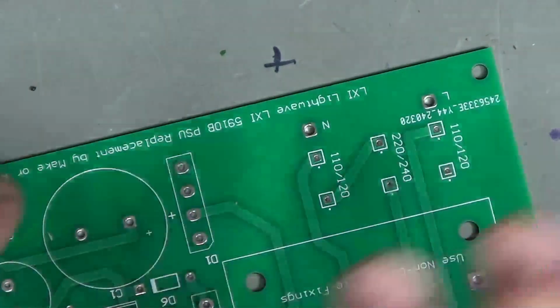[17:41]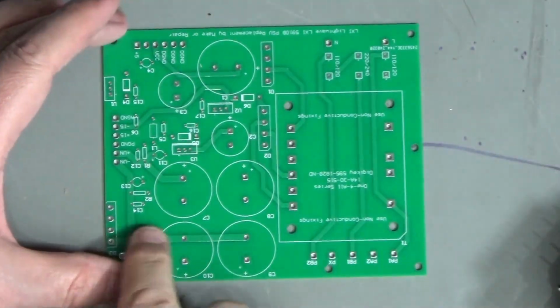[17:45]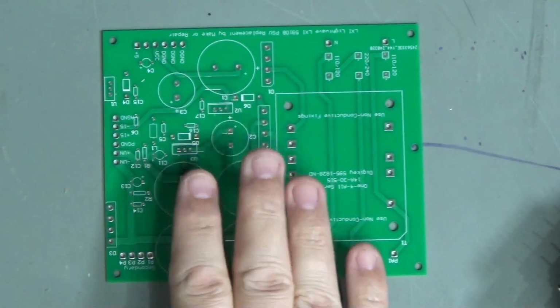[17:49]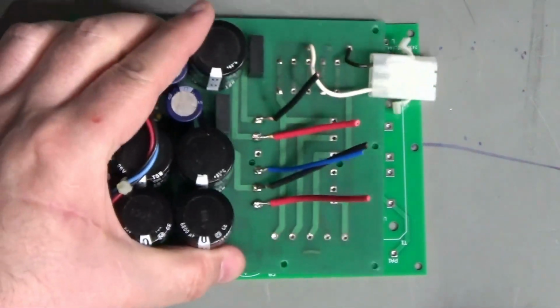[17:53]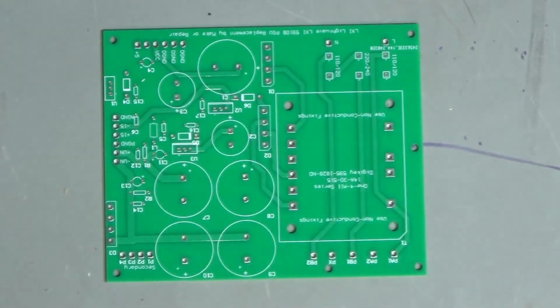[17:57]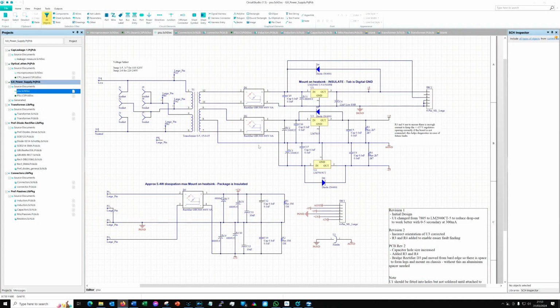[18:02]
So instead, I have produced this PCB. Now what I've done in terms of the circuit for that is I've pretty much replicated the original. So I've been through here, I've traced through. Let's have a quick look at the circuit if I can. Right, so here's the circuit diagram. So this is pretty much the reverse engineered circuit.
There are a couple of modifications that I made along the way, and I should say that this circuit, as we're looking at it now, does have a couple of revisions that I made after building this up and doing the repair. But I'll point those out as we go along, and hopefully it will all make sense. So I'm running this on a 4K screen, so I'm going to zoom into the relevant areas for you. So first of all, let's take a little look at this area.
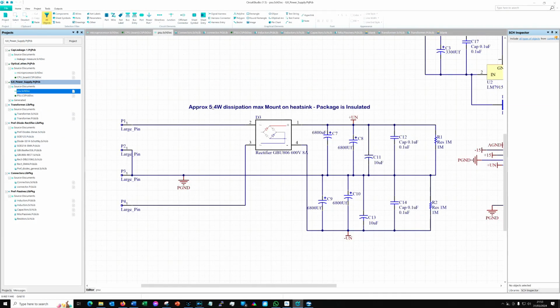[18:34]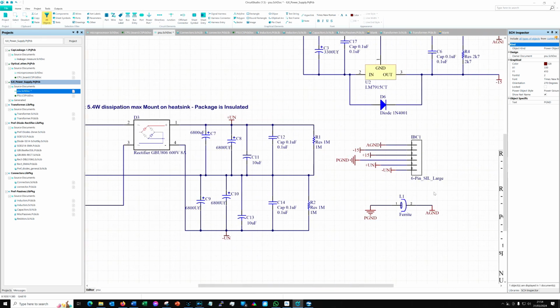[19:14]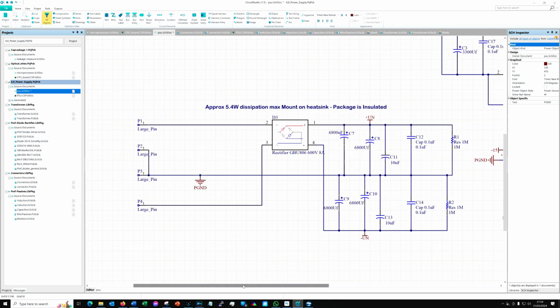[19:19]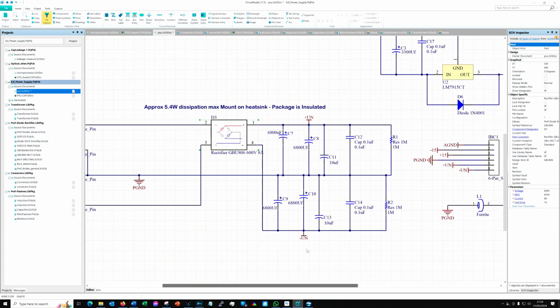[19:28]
So that's fine, and that just runs straight through the middle, and ultimately that will join up through this little ferrite with the analog ground off the 15 volt circuit on the other part of the board. But for the moment we just need to know that we've got a simple circuit with no regulation. We've got a rectifier diode in the middle up here, and that is mounted on the chassis as a heatsink. It's about 5.4 watts I worked it out at, so that's fine. Nothing too much there.
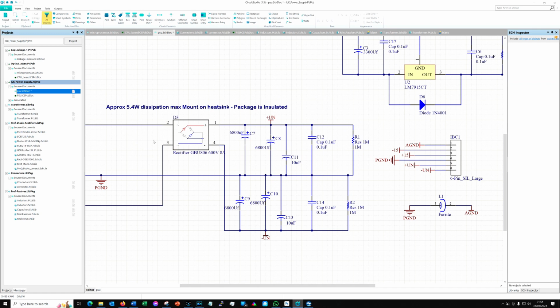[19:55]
And the rectifier that I've put in is a GBU806, which is completely over the top for this, but I just happen to have 10 of them in the drawer, so that worked for me. And I set out the board so that I could align this with the same hole that was used before. This is a smaller, less thick diode, so I did actually have to put a little shim in there onto the chassis just to take up the spacing, so an aluminium spacer.
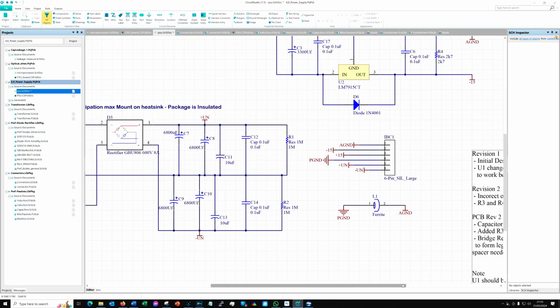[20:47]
If we move on, we'll see there's a bunch of electrolytic caps, so 6,800 microfarads on each rail, and then another one. So that's over 13,000 microfarads on each rail. It seems a little excessive, I'm going to be perfectly honest, and then it's followed by a 10 microfarad and a 0.1 microfarad. And then we've got a 1 meg resistor on here, presumably just to notionally hold ground in the middle, I suppose. Doesn't really do anything that I can see, to be honest, just gives it the tiniest little bit of loading.
This isn't high voltage at all. It needs to deliver, of course, about 4 amps. These are very low ESR capacitors. They're only about 25 milliohms. Sorry, yeah, that's not much, particularly with 2 of them in parallel. Now it is the case, of course, that with a capacitor working on DC, you don't really get the capacitance that you're looking at here effective. But yeah, it still seems an awful lot for what it's doing.
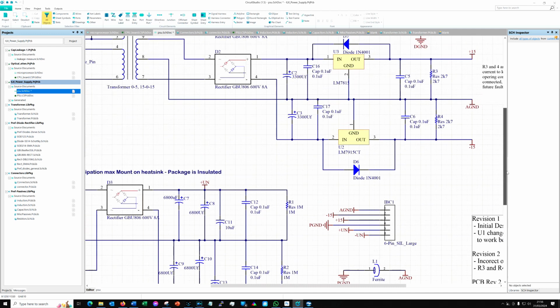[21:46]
But I decided these capacitors were in perfect condition, and when I took them off and measured them, they were absolutely perfect. So I decided to keep those big 6,800 microfarad capacitors and just reuse them. I did replace the 10 microfarads and the 0.1s, of course, because they're ten a penny in my drawer. Also, rather than working out a good value for the ferrite, I just recycled that as well.
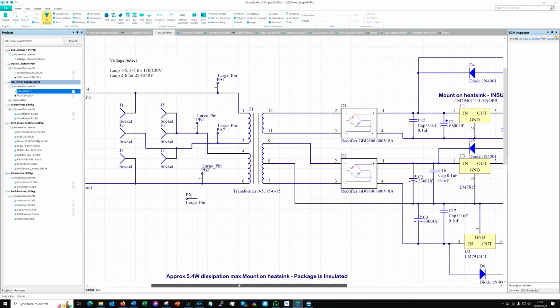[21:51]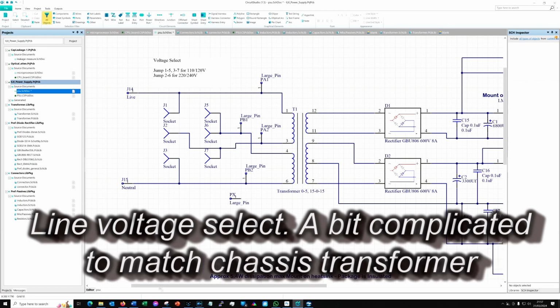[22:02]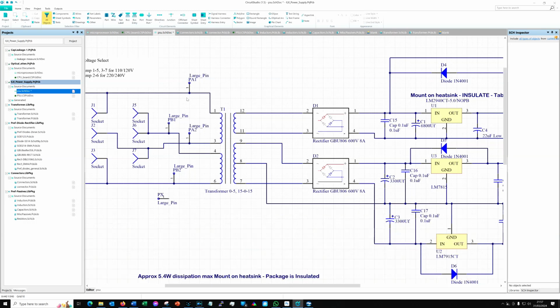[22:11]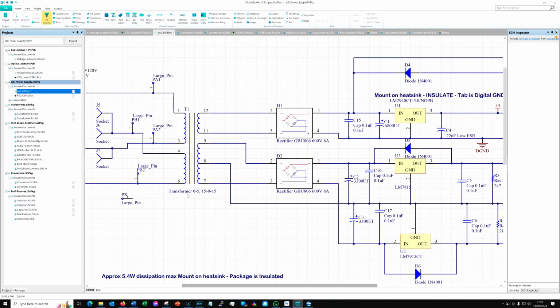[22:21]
Let's move up to the top section where there's a bit more going on. So here is my input, and first of all we come in with the live and the neutral on the left hand side, and then we come across a whole load of little sockets and jumpers and things, and these are just the jumper points on the board, and these little large pins, PA1, PB1, PA2, etc. are just the pins going off to the chassis transformer. I just needed some way to make the sockets available for them. And then we have our transformer.
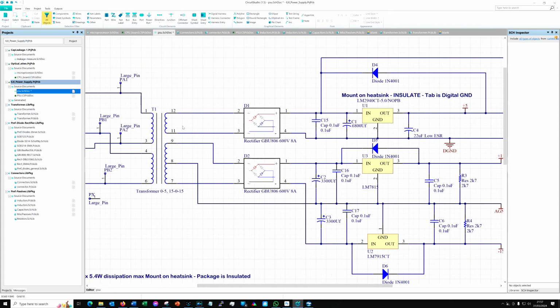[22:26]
So at the top we've got pins 11 and 12 are the 0-5 volt output, and then down lower we've got 7, 8 and 9 are the 15-0-15. And as I said before, because this top rail is 5 volts and not 6 volts as I would normally use, we can't really use a 7805 anymore. The original board uses a 7805 regulator, a 7815 and a 7915, which are just off the shelf 30 pence each regulators, easily available from anywhere, and I put new ones in, of course.
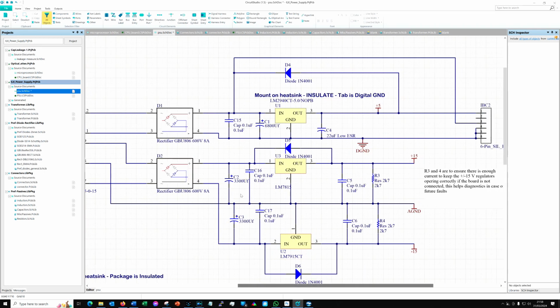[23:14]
So same type of diode that I popped into the other part of the circuit, because I've got several, why not? And then we're coming along, and in the 5 volt line, which is this top one, we've got one of those 6,800 microfarad capacitors again, which again just feels over the top for a 5 volt line that's only drawing 300 milliamps maximum. So yeah, anyway, there you go. And we've got a 0.1 microfarad just on the input to it.
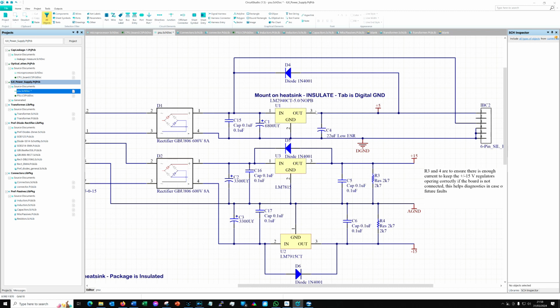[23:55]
Now that is not particularly needed, but you know, why not? Anyway, I replaced my 7805 with an LM2940CT-5. This is a 5 volt regulator, but it only has 1 volt dropout, so I don't have any problems with that lower input because we're using that different regulator. Same pin out, same current, everything's basically the same, it's just lower dropout.
The other thing that is different with it, however, is this capacitor on the output. On the original, this was a 0.1 microfarad capacitor on the output, but because we're using a 2940, we have to replace that with a 22 microfarad, and that's because we require it for stability purposes. Anyway, that gives us our 5 volt rail regulated, and that goes across to this connector on the right hand side, which is of course the exact pin out of the one on the board.
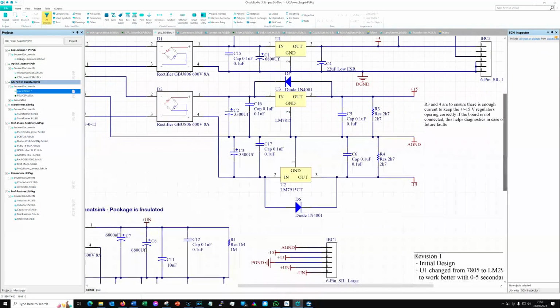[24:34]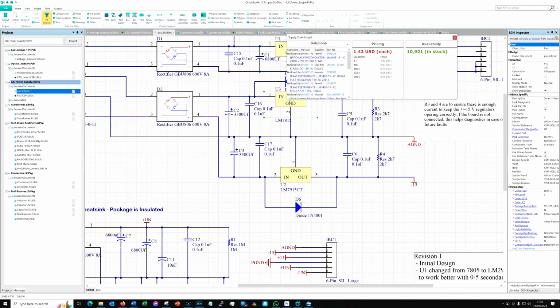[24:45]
Coming down, we can see that our 15 volt supply is not really much different. We've got a 7815 in the top line. Now in the video later you'll see that I actually got the pin out on that wrong. I did blame it on Altium, but it wasn't their fault. I did actually wire that the wrong way around. I was moving things around on the diagram and just made a mistake. And at the bottom we've got a 7915, which is the minus 15 volt, of course.
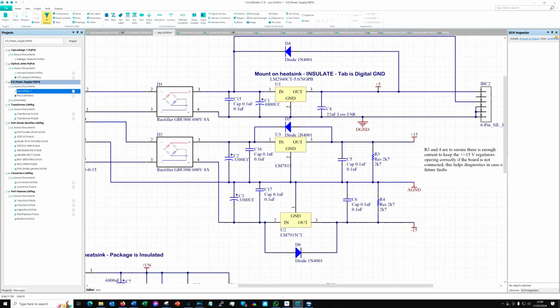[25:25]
3,300 microfarad capacitors on the input to both, and this is just a bog standard bridge rectifier going into a bunch of capacitors and into some off-the-shelf regulators. A little bit of capacitance on the output. Unnecessary, I think, are these diodes, which you would use, for example, if you were running relays and things like that, just to stop any reverse voltage, reverse current. But I'm not really sure what they're doing on here, but since they were in the original, I put them in. I've shown them as a 1N4001 on the diagram, but actually I just used a Schottky diode out of the drawer.
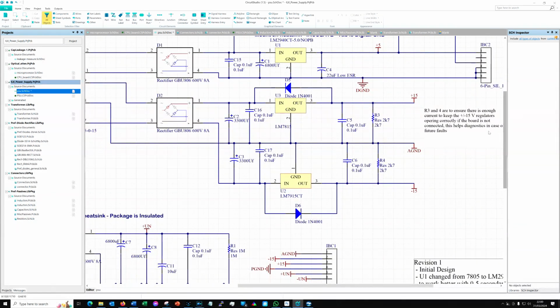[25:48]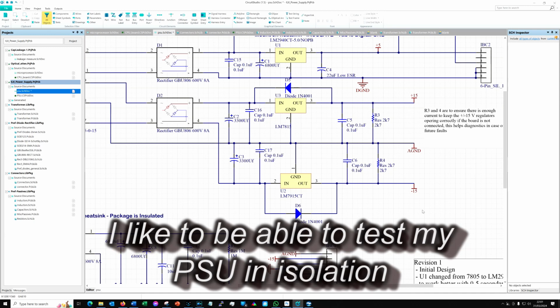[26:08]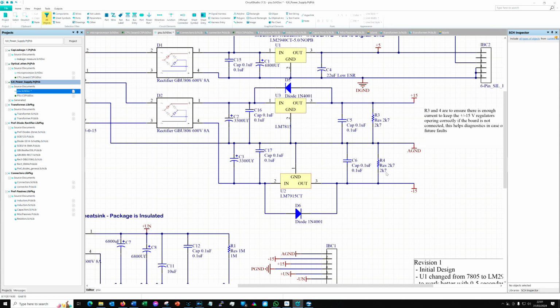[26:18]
Okay, and the other modification that I've made on here is resistor 3, resistor 4. These are 2K7 resistors on the LM7815 and the LM7915. The reason is, particularly the 7915 wouldn't regulate without this load. It failed to regulate below 4.5 milliamps of current draw, and that's what that 2K7 is basically giving it: just a few milliamps of loading so that the regulation would be stable. Shouldn't really need that, but maybe it's just the make of 7915 that I got in my drawer. It's probably 20 years old, I suspect. Anyway, so that's it. It's a ridiculously simple circuit, really.
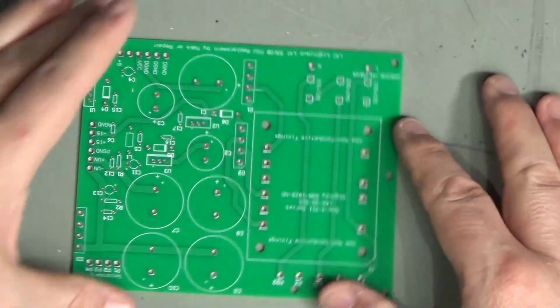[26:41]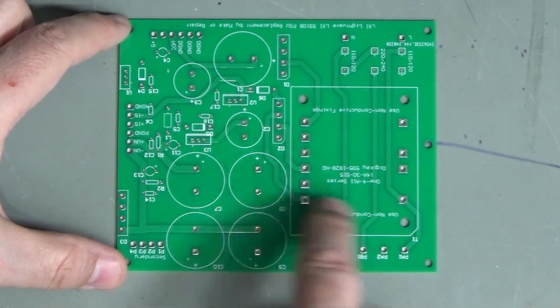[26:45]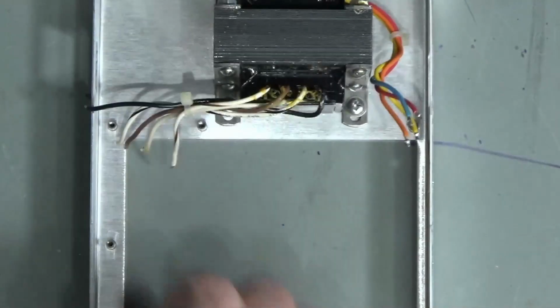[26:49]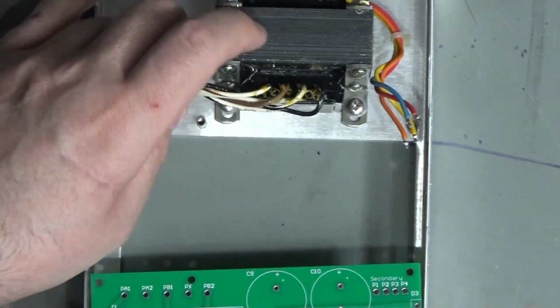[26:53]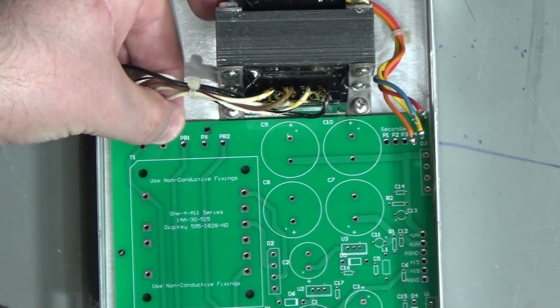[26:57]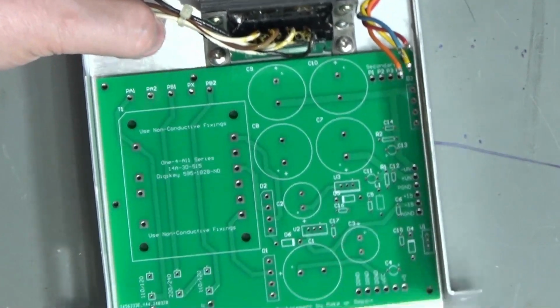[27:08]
I've physically made this board exactly the same size, and I've put the mounting holes in the same place, I hope. And this is my first tryout today. Because they are slightly tricky to... oh yeah, that's absolutely perfect. So that's great. All those mounting holes line up just spot on.
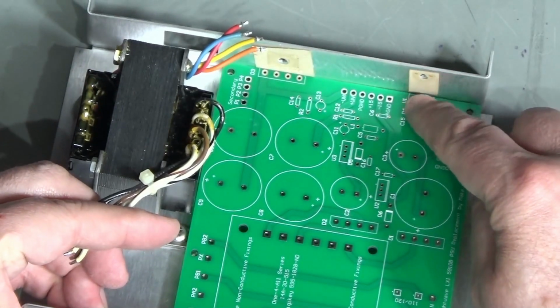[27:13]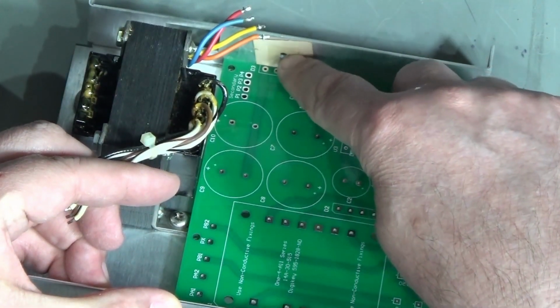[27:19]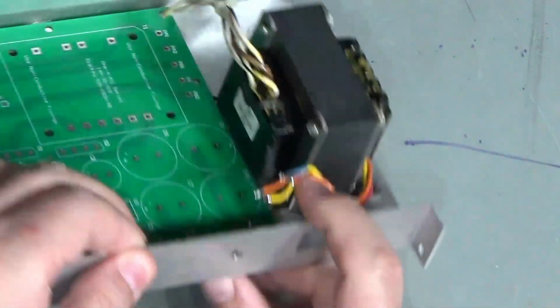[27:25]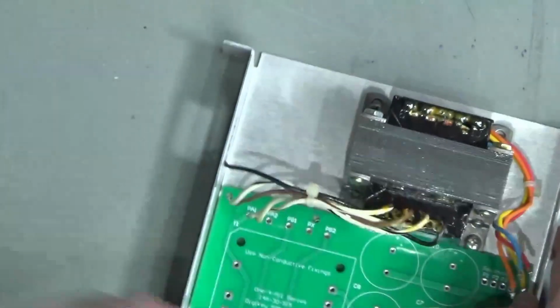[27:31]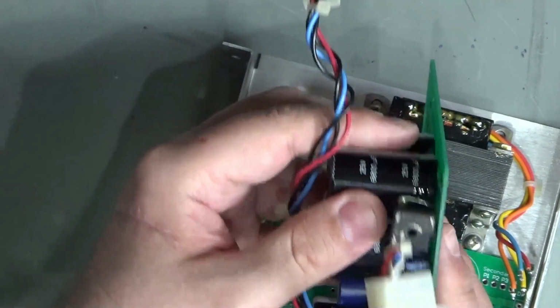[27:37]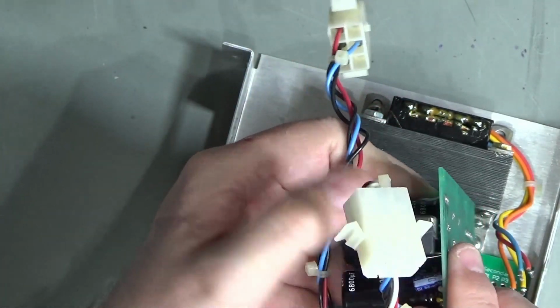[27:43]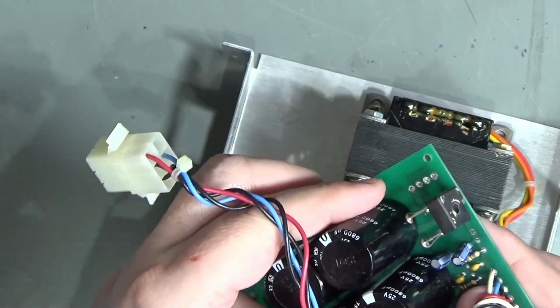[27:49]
And if we look on this side, just here, we can see the 7805 is lined up with the original mounting hole for the 7805 in here. And the bridge rectifier is also lined up with its mounting hole on the chassis just here. Now I do think this mounting hole here, which is for the bridge rectifier, I might have to just extend upwards a little bit, because I'm not going to try and reclaim the bridge rectifiers. One of the reasons is that this bridge rectifier, I don't know if you can see, but the outer insulation has all chipped off and, oops, is broken. Not sure if that shows up on the camera or not, but it's a bit of a cracked mess. So I'm not going to be reusing that, that is for sure.
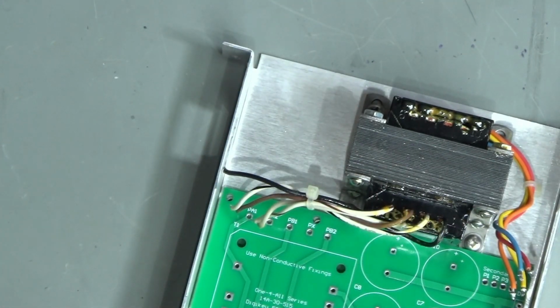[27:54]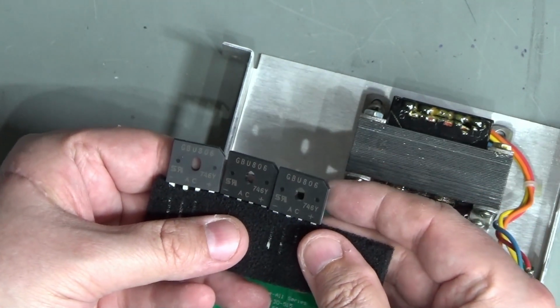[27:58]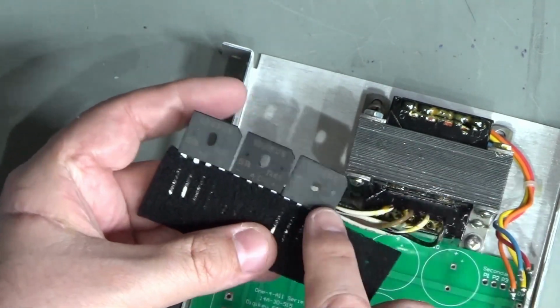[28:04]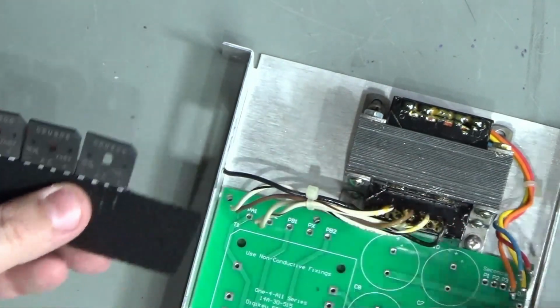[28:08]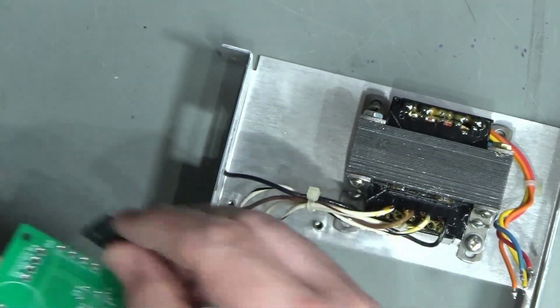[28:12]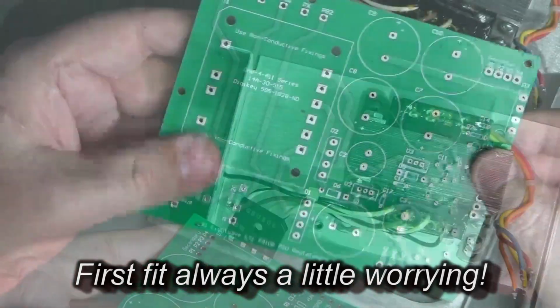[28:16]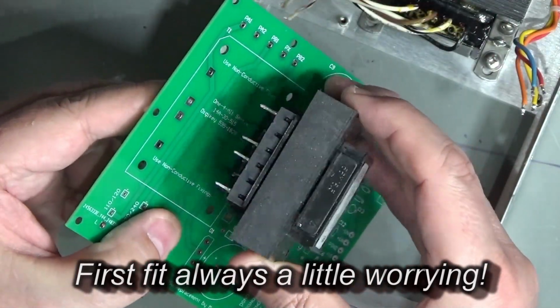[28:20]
Instead, I'm going to be using these. These are GBU806s, which are considerably over specified. I think these are 600 volts, 8 amps. So ridiculously over specified for this job, but you know, they are what they are. And hopefully they will just drop in like that. Hopefully as well, I've got the pin out just right for the transformer.
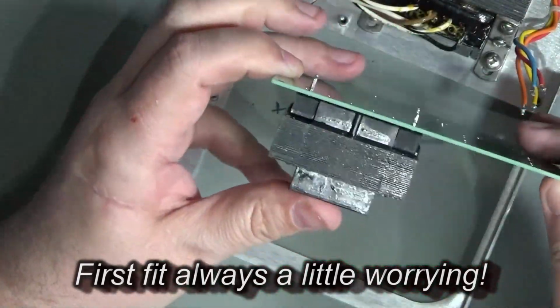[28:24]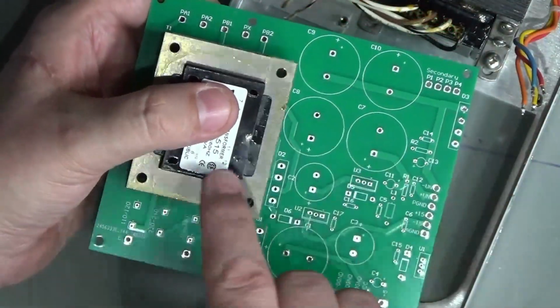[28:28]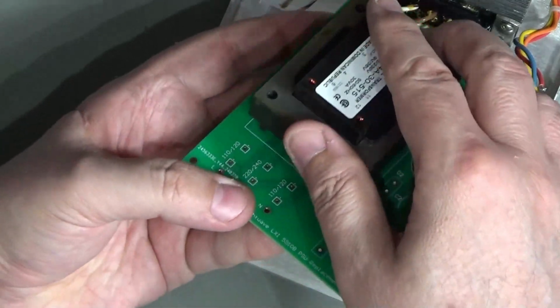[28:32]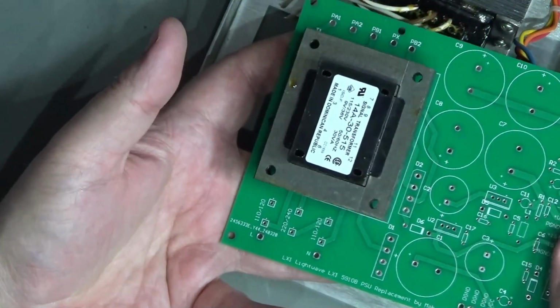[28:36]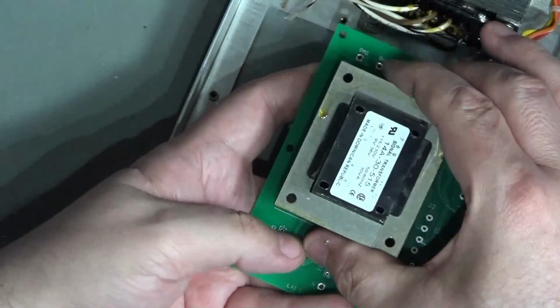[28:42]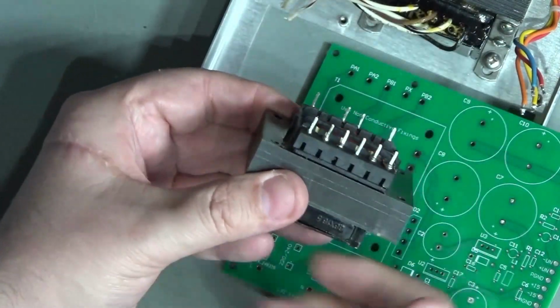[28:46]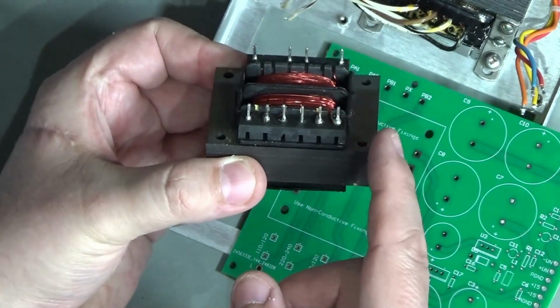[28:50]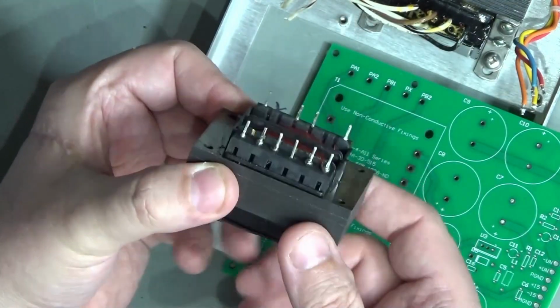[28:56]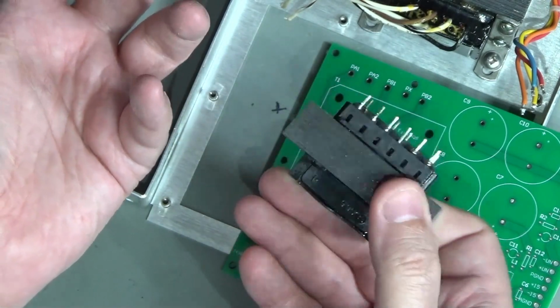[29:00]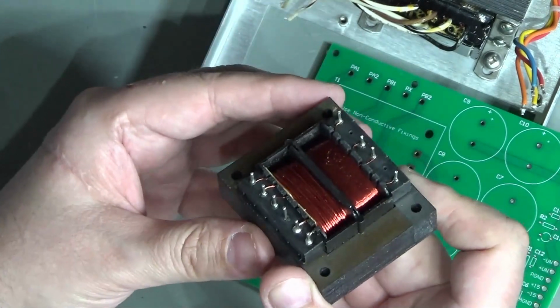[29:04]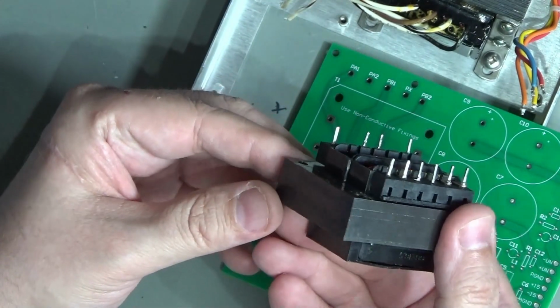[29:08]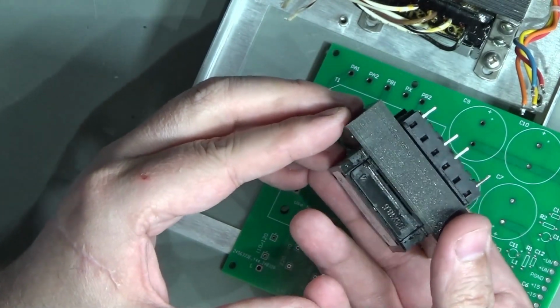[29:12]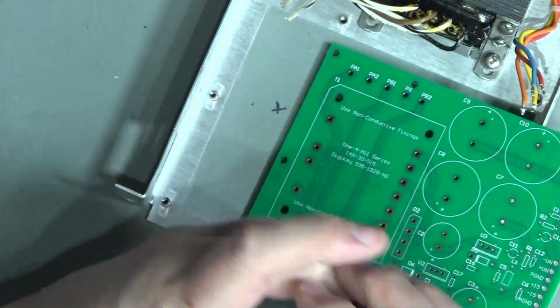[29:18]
I did actually get delayed ordering this board because I wanted to be absolutely certain about this transformer pin out when it arrived, because the data sheet was a little bit ambiguous about one or two factors on it. I wasn't too keen on that, so I ordered the transformer and waited for it to arrive. I got that from DigiKey, by the way, and I was very unhappy. It arrived with these pins badly bent, because literally they'd put one wrap of bubble wrap around it, which of course these pins went straight through in a moment, and then chucked it in a plastic bag and just threw it in the box with all the other small components that I got, and it was rattling around on the flight from America. Not impressive really. But fortunately I did straighten them. Otherwise, I would have had to make my first return to DigiKey, and they didn't have a lot of these in stock either, so I was a bit lucky there.
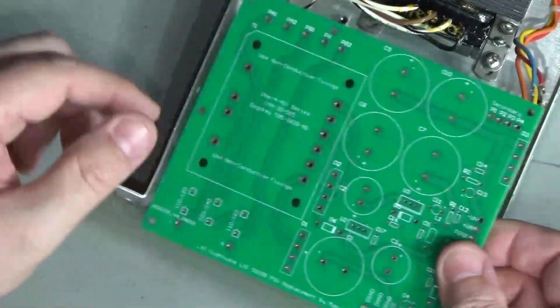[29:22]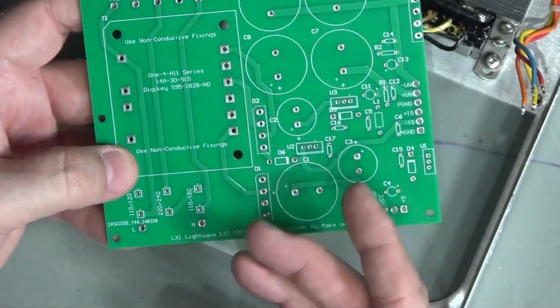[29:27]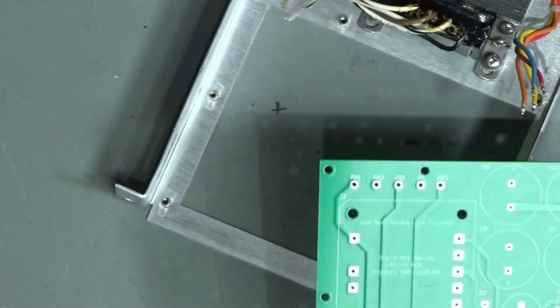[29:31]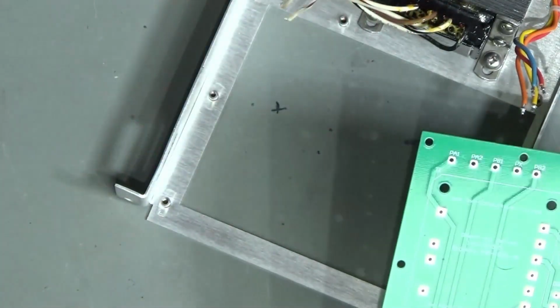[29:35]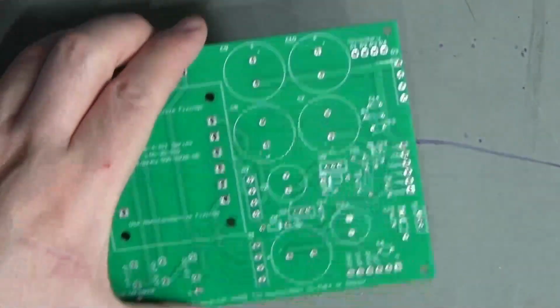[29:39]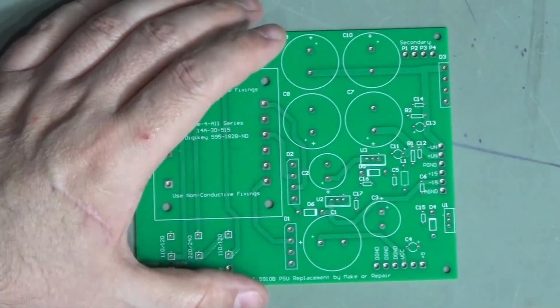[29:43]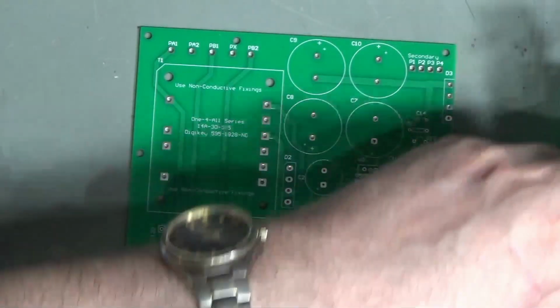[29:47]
Anyway, time to start assembling this board, I think. This is one of the key times when you want to start with your low components, because these capacitors are very, very large, and so is the transformer. If I mount those first, although they'll give lots of stability, they're not going to make life very easy for me.
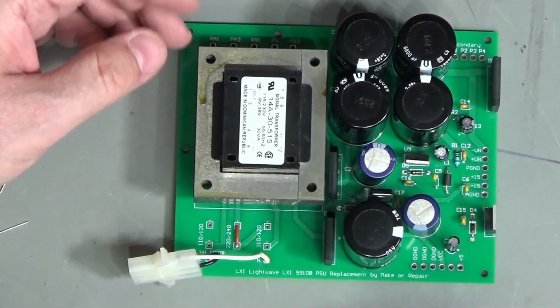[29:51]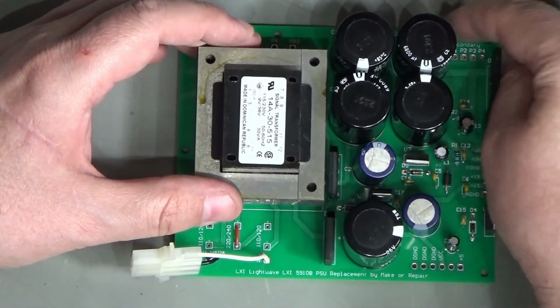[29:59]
Okay, so that's all the parts fitted: transformer in, voltage selection link in, mains connection on. I haven't connected up the other wires just yet, because I'm going to test it before I attach the various wiring looms. There are 1, 2, 3 that need attaching, and obviously then I need to bolt it to the chassis and apply whatever I want for heat sinking.
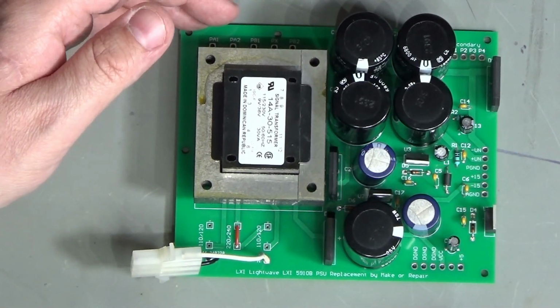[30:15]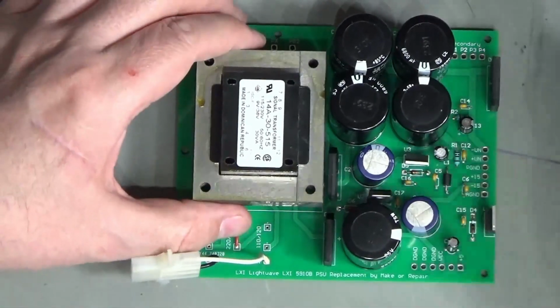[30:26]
Yeah, looks okay, I think. Looks very much like the original. The layout isn't quite the same, but because the holes are in certain positions, these two components had to be in exactly the right position, and I wanted to make sure that all these connectors along these edges were in identical positions. That kind of dictated that the layout I produced was going to be very, very similar to the original one that the manufacturer produced.
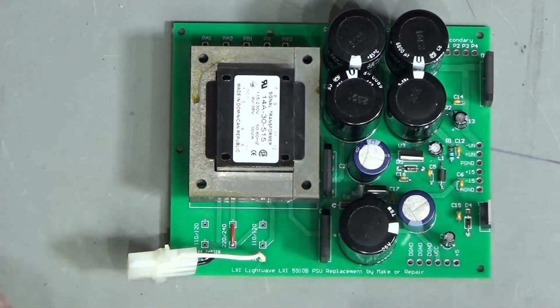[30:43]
Anyway, I need to connect this up now and make sure it works before I plug it in to the main system. So I'm going to do some continuity checks to begin with and just make sure that everything looks sensible.
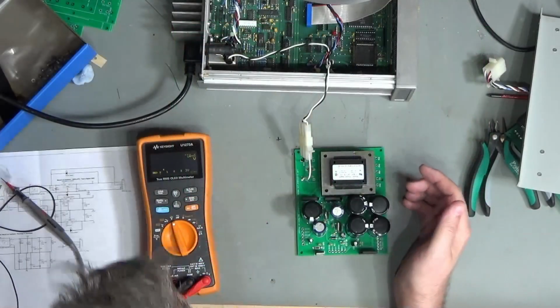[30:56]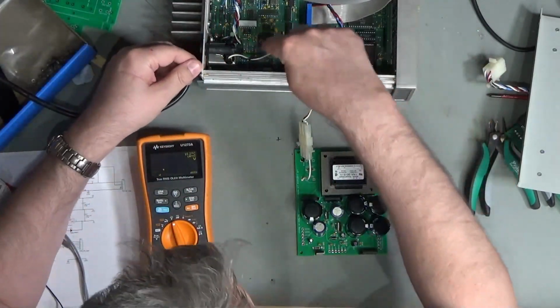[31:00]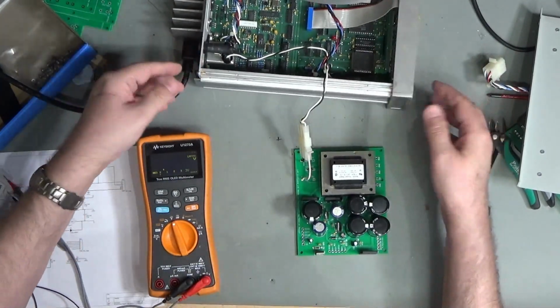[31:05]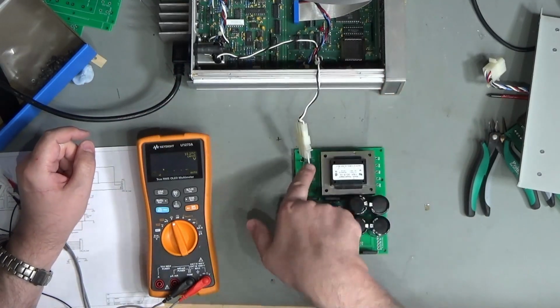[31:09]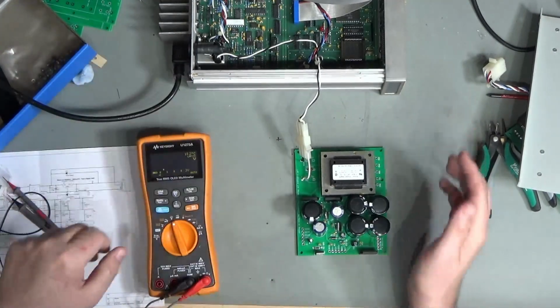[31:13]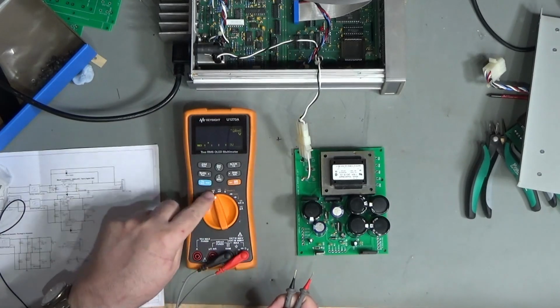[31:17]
Okay, so I've connected my main unit onto the mains. I'm putting it through here. Obviously I've got a switch on my main unit to disconnect power, and then I've got my mains switched coming out onto my board. So that's off. I'll turn the mains on. And I've got my multimeter here in DC volts mode, ready to measure various voltages and see whether or not we have a working system.
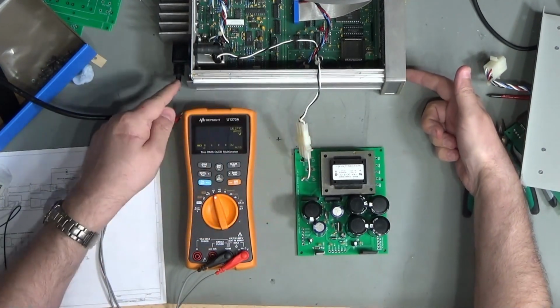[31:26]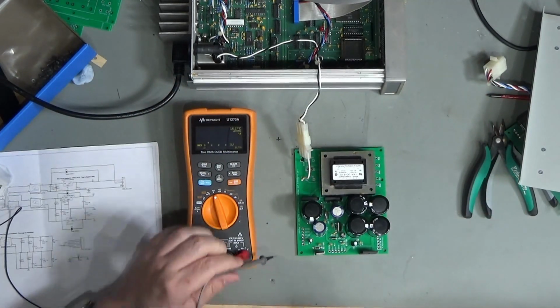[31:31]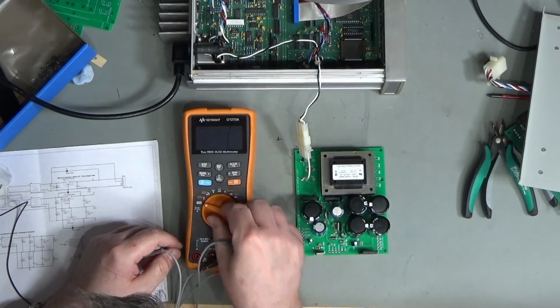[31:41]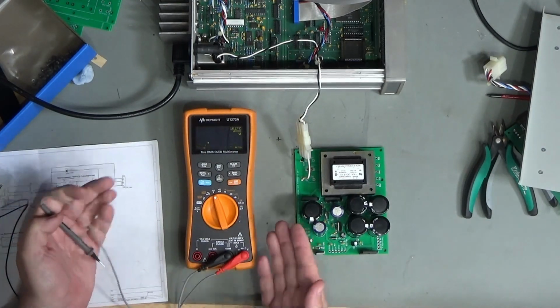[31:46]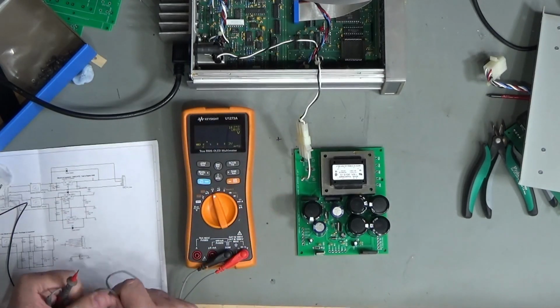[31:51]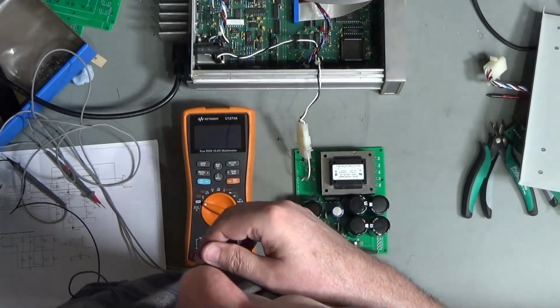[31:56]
So first of all, crossing fingers. Okay, nothing blew up. This is good news. All right, let's connect to digital ground. See if I've got 5 volts or not. Don't seem to have anything actually on my multimeter. Just failed. Oh, seriously? My multimeter's just gone wrong. Unbelievable. Okay. That is just evil.
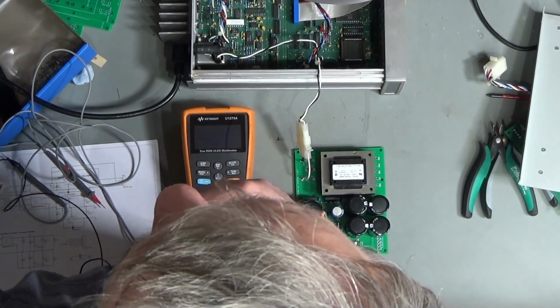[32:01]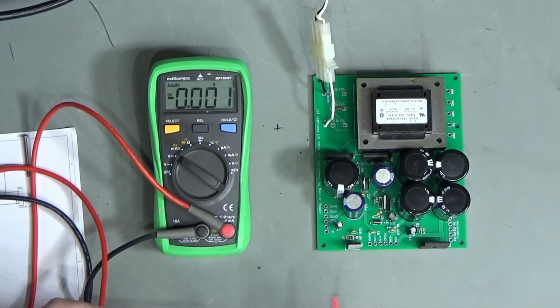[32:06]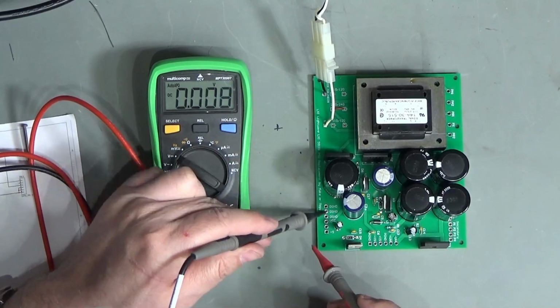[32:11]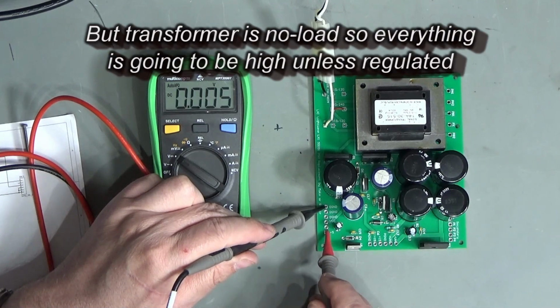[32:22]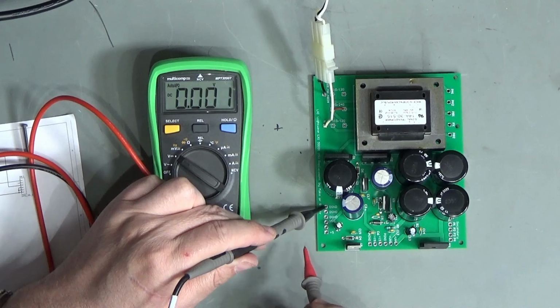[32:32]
Okay, so here we go. You may have seen this reviewed in a video I did on budget multimeters. So VCC, if I remember rightly, this is the unregulated 5 volts going into the regulator, so 13.9, that's a bit higher than I'm expecting. And there you go, 5 volts on the 5 volt line, so that's nice. Of course this is under no load, which is why that VCC is so high.
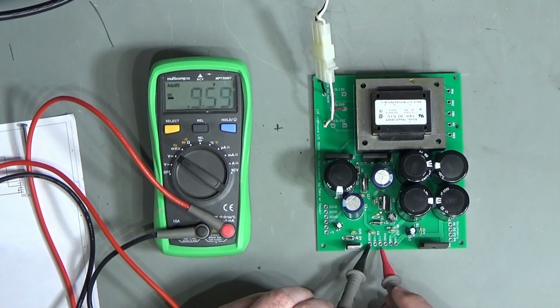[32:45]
Okay, analog ground, I should have minus 20. Well, that doesn't sound right, does it? Plus 15, that isn't right at all. Nothing on there and nothing on there, because of course that transformer isn't connected up. Oh, so why have I got all of that voltage on here? Why are these voltages a million miles off?
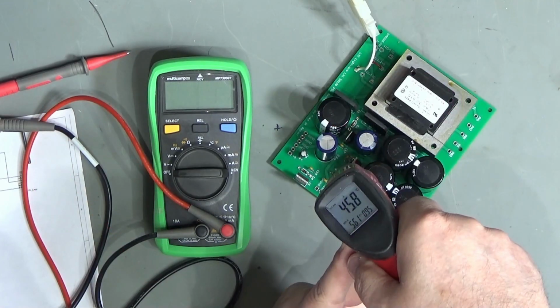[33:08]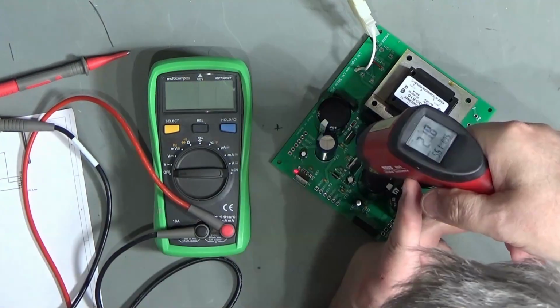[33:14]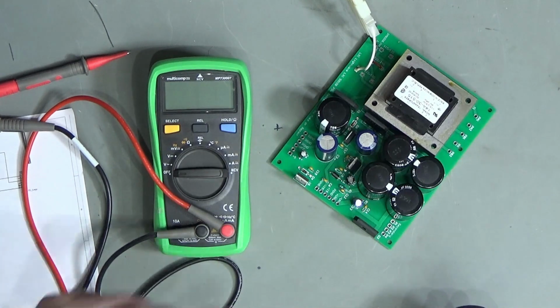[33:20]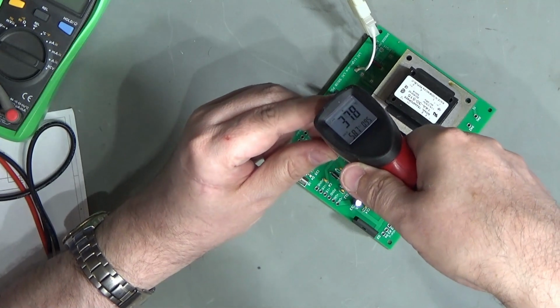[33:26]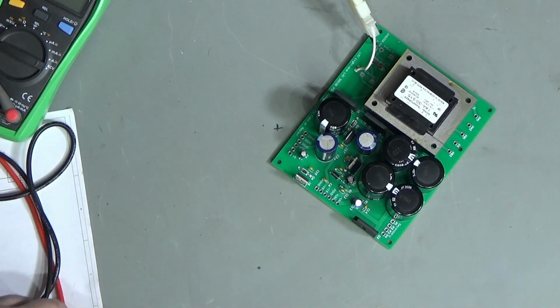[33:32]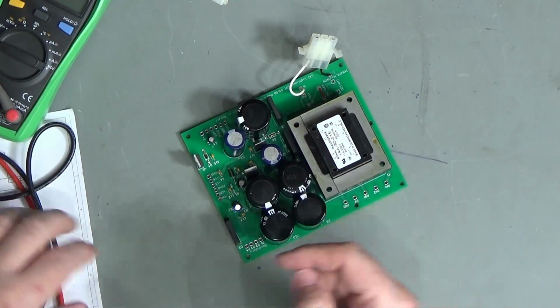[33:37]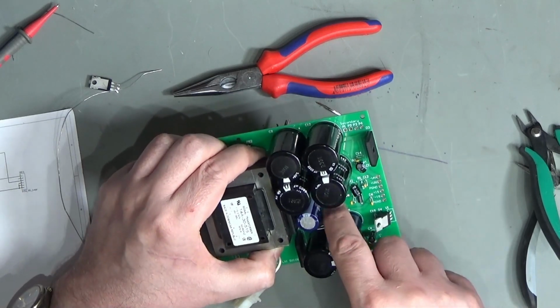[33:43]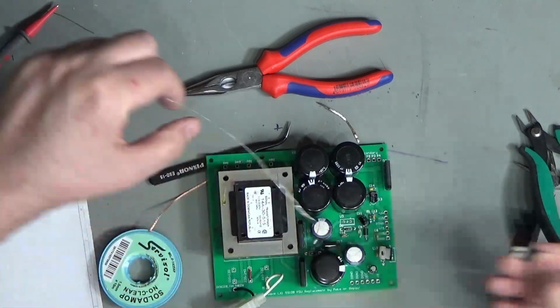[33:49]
I think it was 50 degrees. This one seems fairly cool. Coolish, yeah, not too bad, but that one there is definitely toasty. Maybe I've put my 7815 and 7915 the wrong way round. Possible. Definitely backwards. It's definitely in on this side and out on that side. And my screen print is most definitely the other way around.
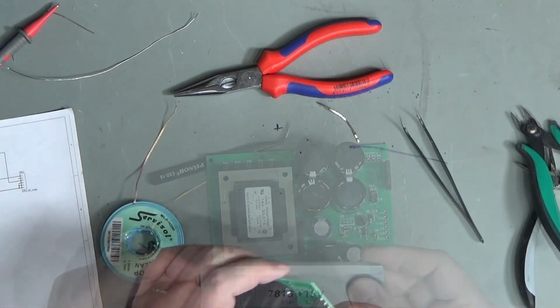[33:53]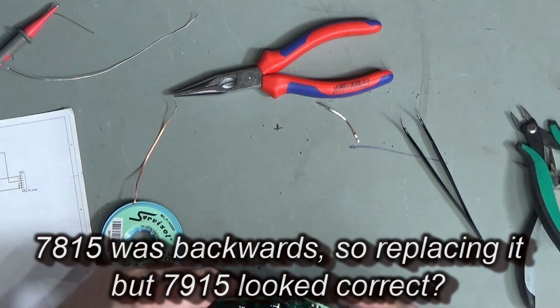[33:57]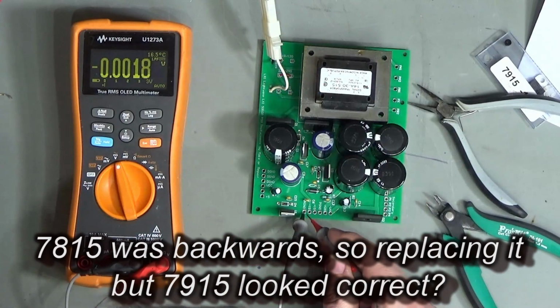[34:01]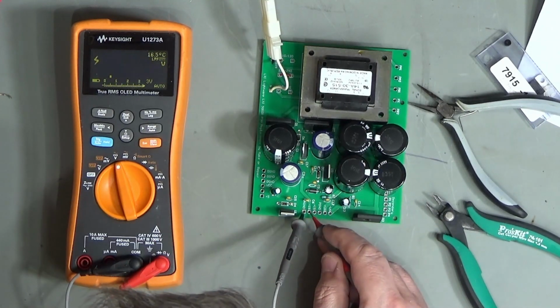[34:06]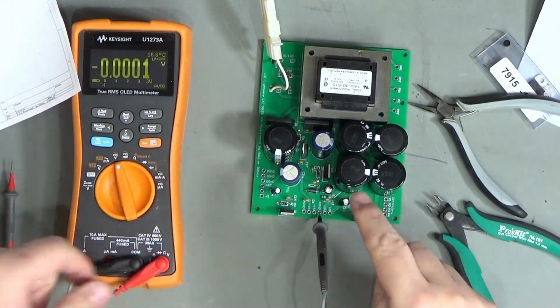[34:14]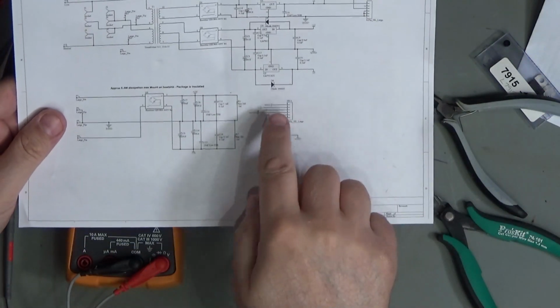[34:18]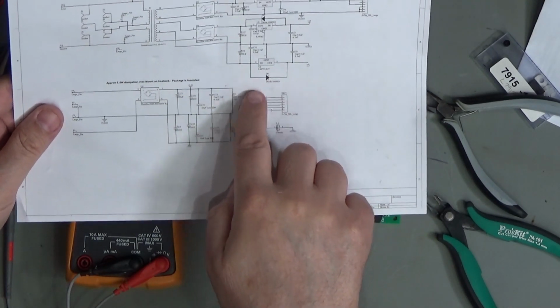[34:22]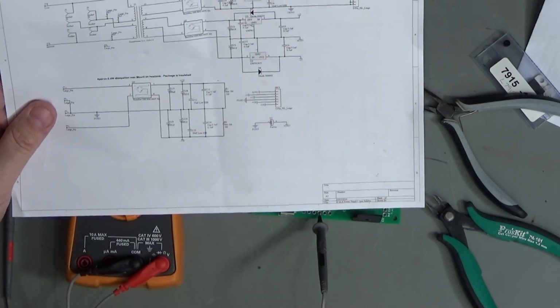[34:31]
So, plus 15, minus 20. The only way I can think of to get minus 20 is, well, it could be something to do with the capacitors, but actually if I'm shorting here, maybe. So through diode 6, is that connected backwards, maybe?
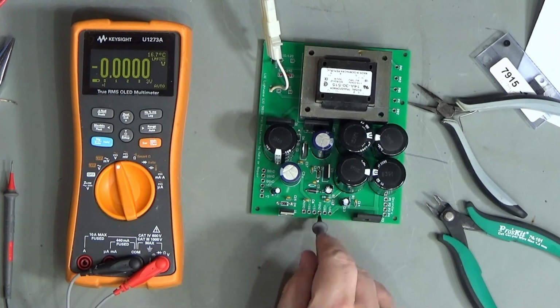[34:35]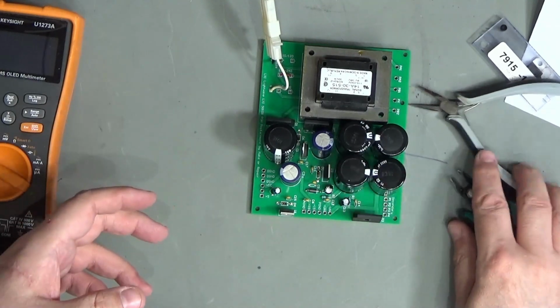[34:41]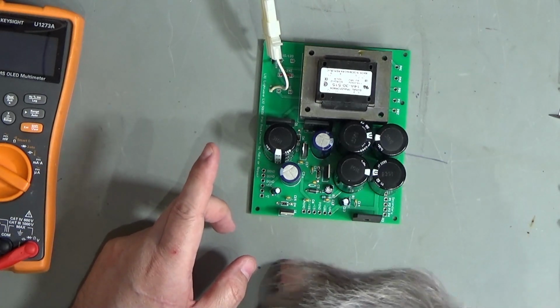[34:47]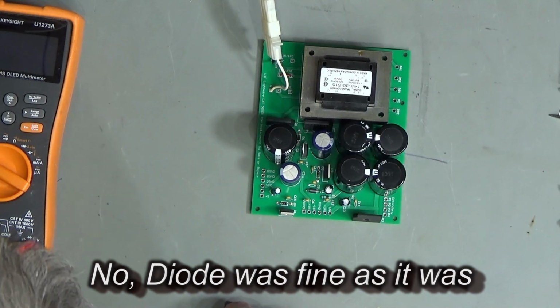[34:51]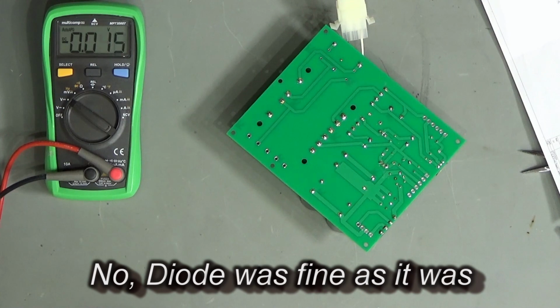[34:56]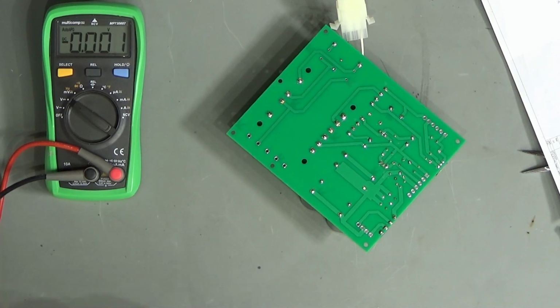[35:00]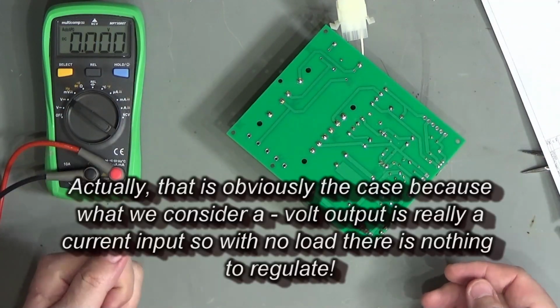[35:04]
In some ways, I'm kind of glad that this has gone wrong, because it demonstrates the issues with building your own circuit, and also the stuff that happens along the way. So diode 6 on the printed circuit board appears to be inserted the right way around. It would be good to get a little bit of load on this, maybe. Maybe it's not regulating simply because it has insufficient load.
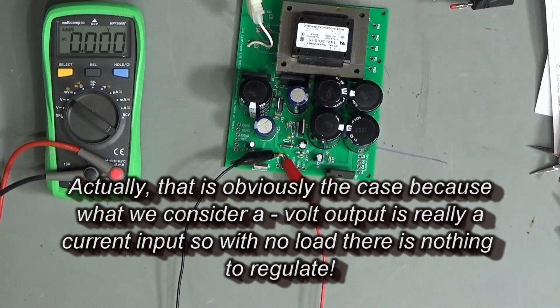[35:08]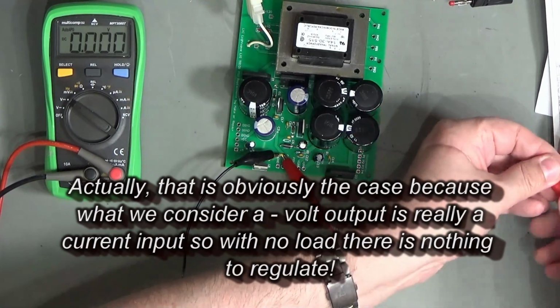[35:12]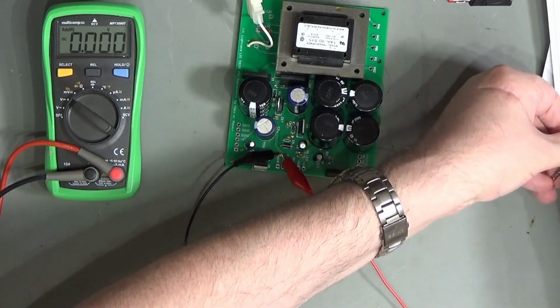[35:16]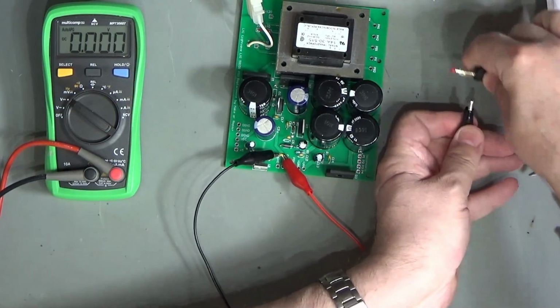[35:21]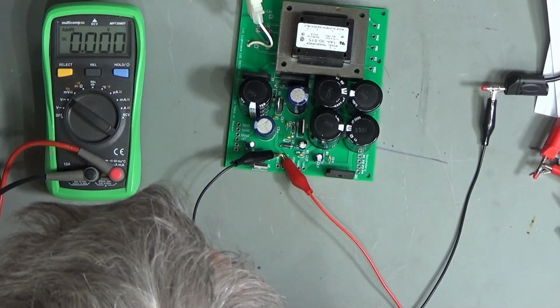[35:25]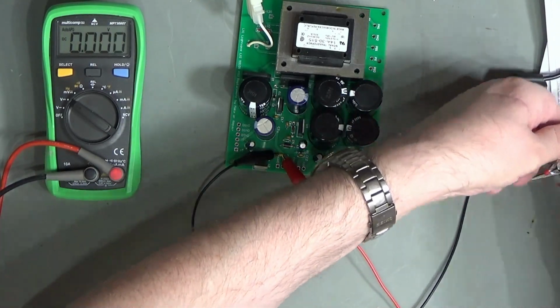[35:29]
So let's very carefully attach a couple of test leads here, and then we'll connect those onto my DC load. Oh, hang on, let me make sure we've got these the right way around. No, the other way around. It's being a negative voltage.
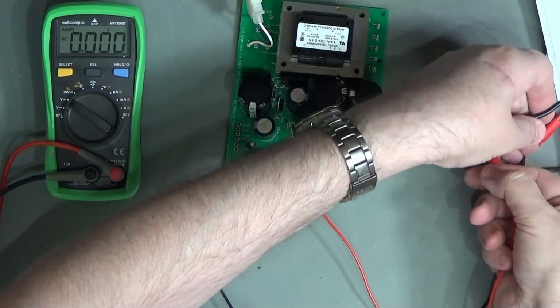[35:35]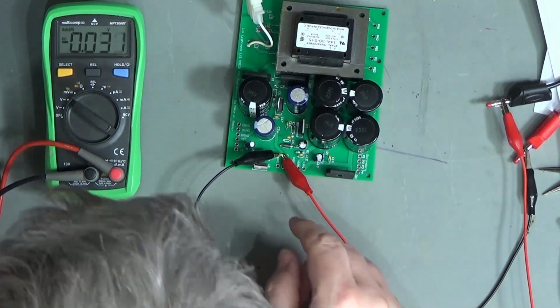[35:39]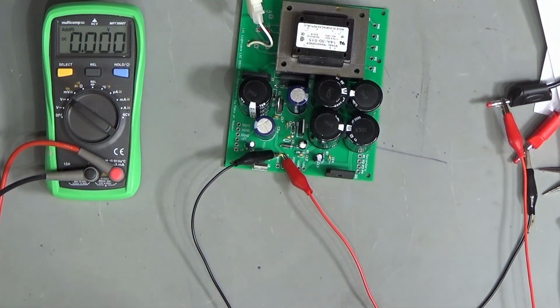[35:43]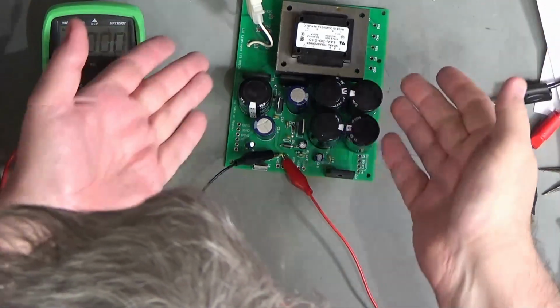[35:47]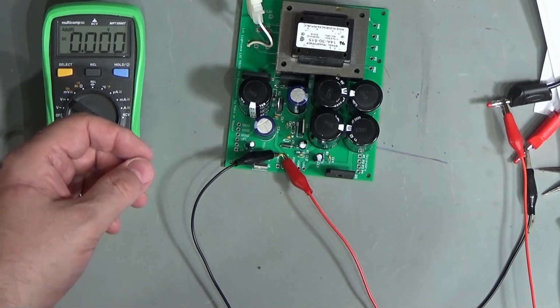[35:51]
Yep, and currently I'm showing 1.2 volts, that's just a capacitor discharging. And we will set it to 0.05. So we'll set this to 50 milliamps and just see what we get.
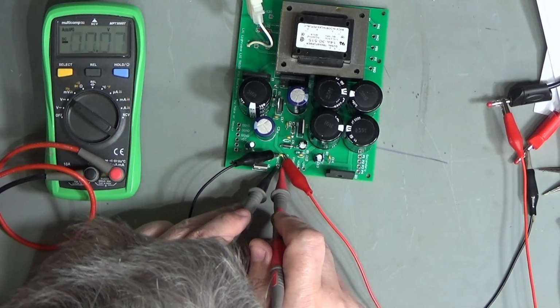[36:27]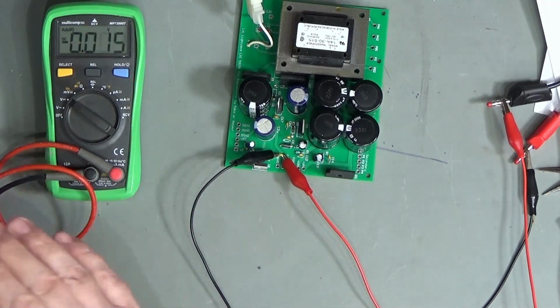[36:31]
Turn that on, nothing happening at the moment, and turn the power on. And we get 15 volts. Oh dear. So now it's regulating, now we actually have some load on it, so that's good. Let me just double check that with the meter here so you can see it. There's ground, and there's your minus 15 volts. Okay.
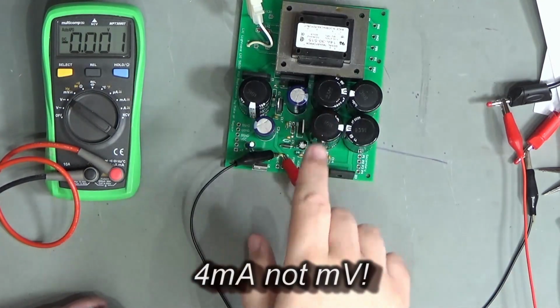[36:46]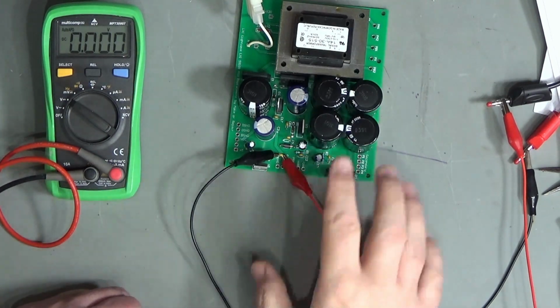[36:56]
So interesting to see, I think, at least. I think it might be interesting to see just at what point it's losing the regulation at about 4 millivolts, something like that, maybe 5 millivolts. And the regulation is pretty poor, to be perfectly honest, down at that end. But anyway, that's around about what's happening with that 7915.
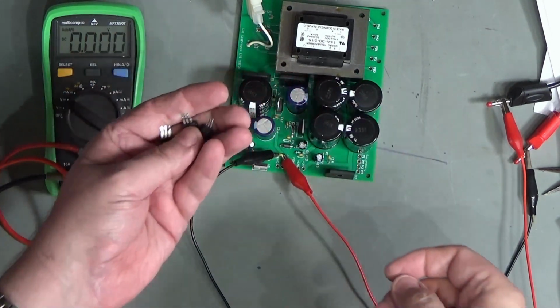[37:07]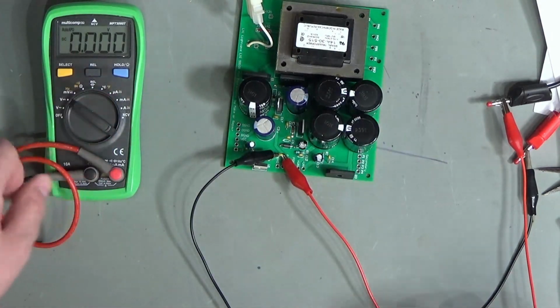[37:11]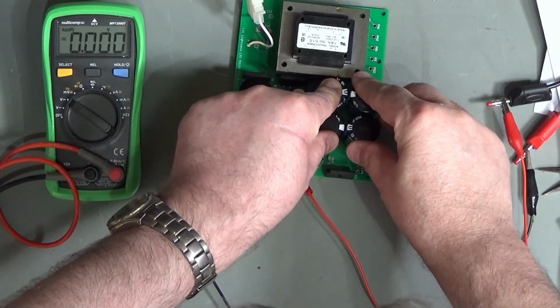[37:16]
So I had got it in the right way around originally. I've wasted 3 regulators along the way here, 7815 and 2 7915, but oh well. Chalk that up to making a mess of things.
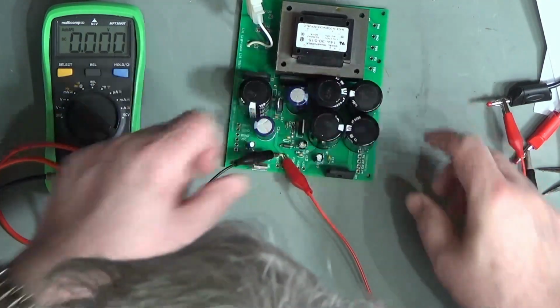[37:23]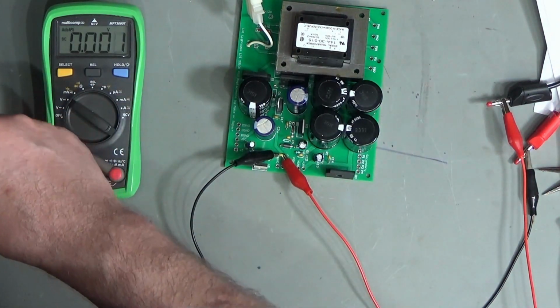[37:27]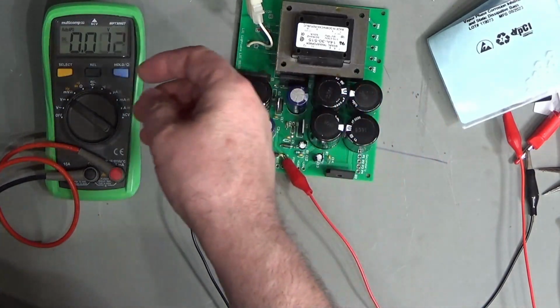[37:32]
So I will silastic these together, put a little bit of silicone in here just to hold these together so that they form a more positive thing, and I'm just going to put some nylon nuts and bolts on here just to hold everything in place. I just need to go and find some washers.
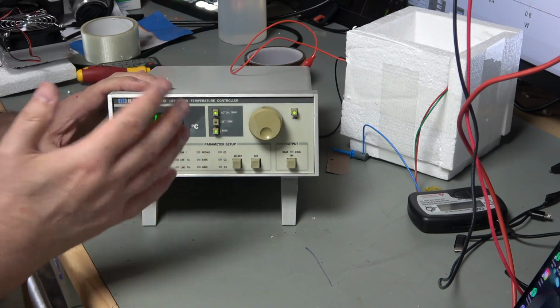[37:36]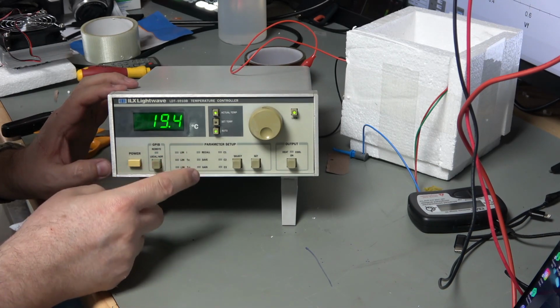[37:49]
So everything's up and running, and I'm going to run a little experiment, I've decided, just to demonstrate how this thing operates. So first up, a quick tour. On here we can control the limits for the upper temperature, the lower temperature, and the amount of current that we use for cooling. So this is going to a thermoelectric cooler. So that's a semiconductor, so the amount of cooling we get will depend upon the amount of current that we source through that semiconductor.
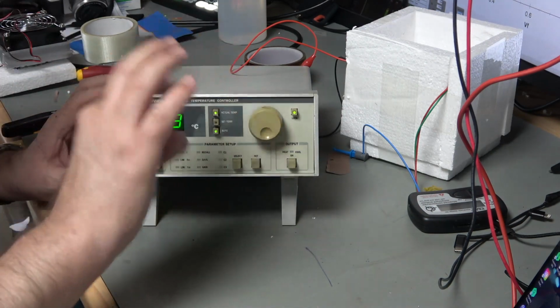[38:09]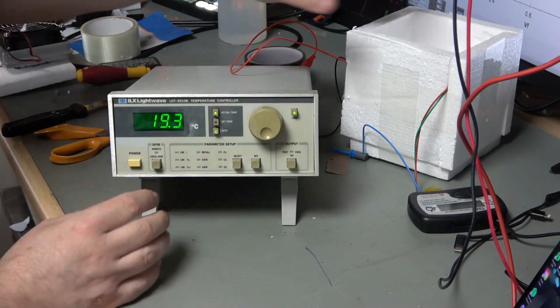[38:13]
Now, if we reverse the power, then instead of cooling, it will heat. Now, I set up a little thermal chamber over here, and in it I've got a PN junction, in other words a normal diode, so a germanium diode as it happens, and I've also got a couple of wires coming out because I've popped a thermistor in there. Here is my cooling unit.
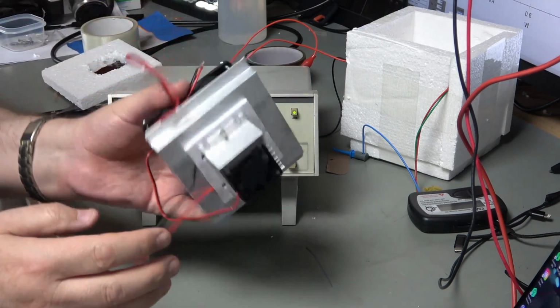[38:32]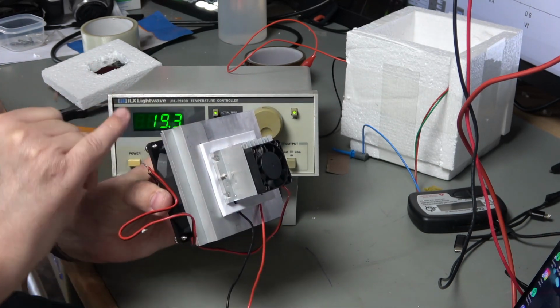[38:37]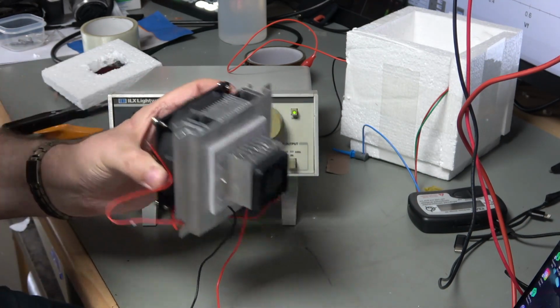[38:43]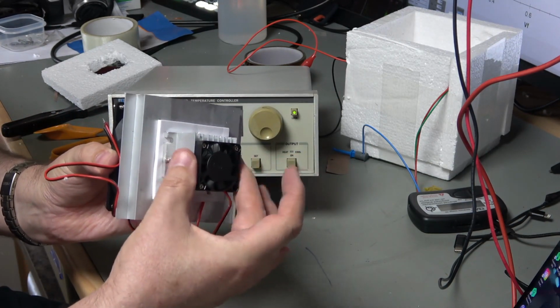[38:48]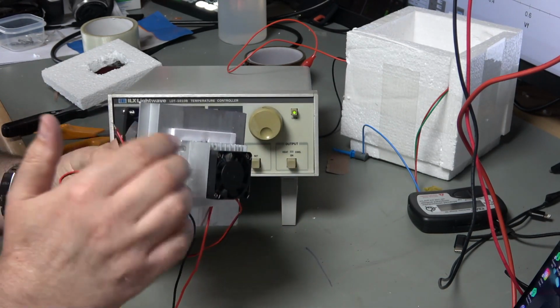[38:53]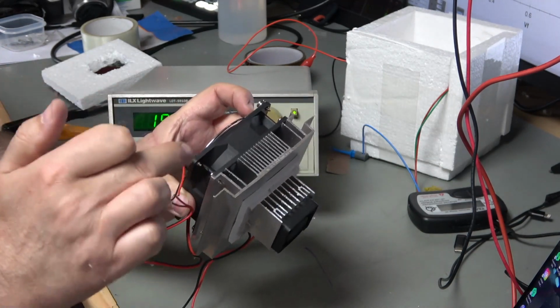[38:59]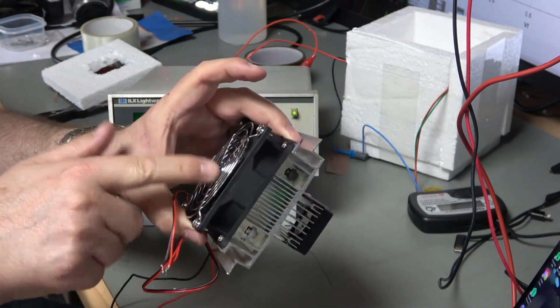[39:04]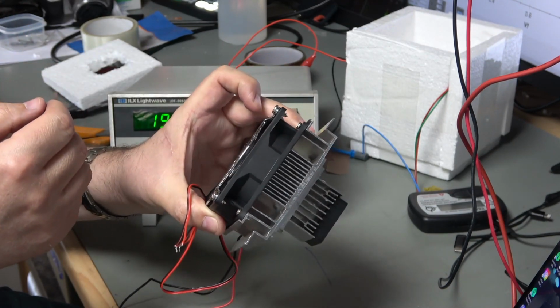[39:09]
So the cooling device is actually sandwiched here between these two heat sinks. So this one is designed for when you're cooling this side down, you might need to shift a lot of heat out of here. When we're heating, it's not such a problem because, of course, we're controlling the amount of heat that's appearing on this side. So if it gets a bit hot, we're just reducing the current. So that's not such a problem. But when we're cooling, we might need an awful lot of energy going into that device, and yeah, that will need a lot of heat sinking and active air movement to get it out of the way.
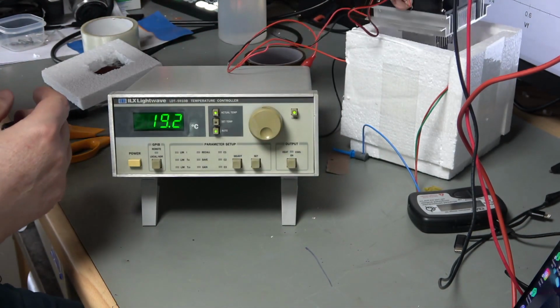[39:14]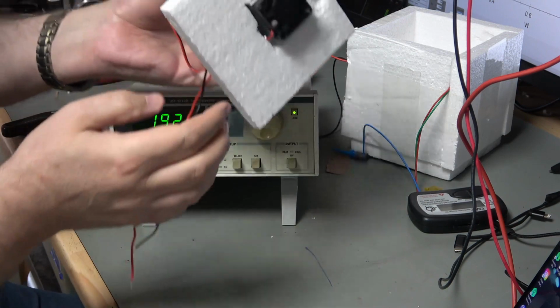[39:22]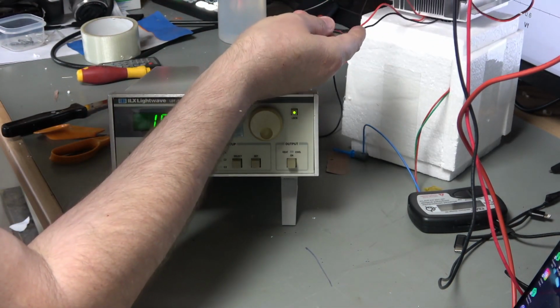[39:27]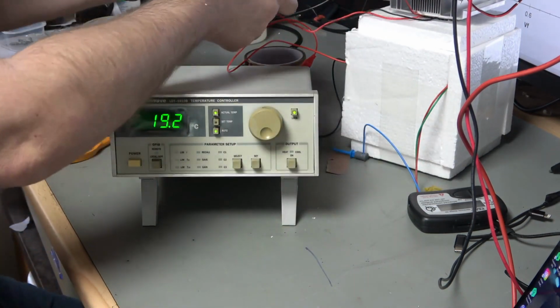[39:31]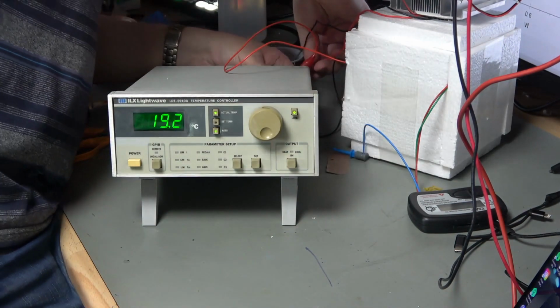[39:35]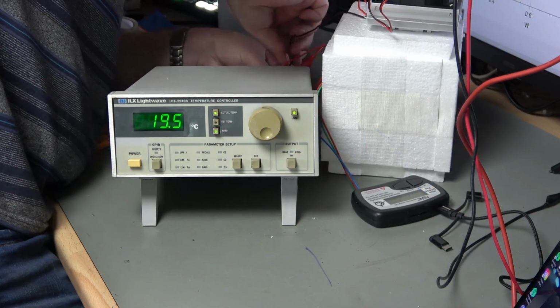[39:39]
So this is going to go into essentially this thermal box through a lid, and I think we'll fit it in that way around like that. So here's our lid, and that's going to go on here, and hopefully we should then be able to cool and heat things down a little bit. Now I do need to, I think, perhaps stretch my cables a little bit. Yeah, there we go, everything's connected up.
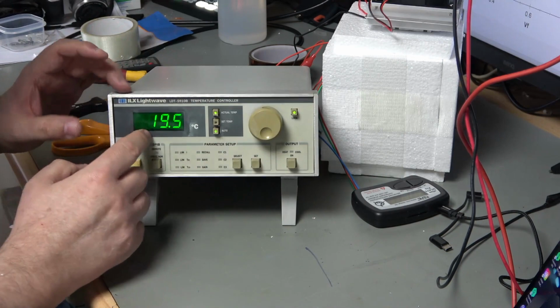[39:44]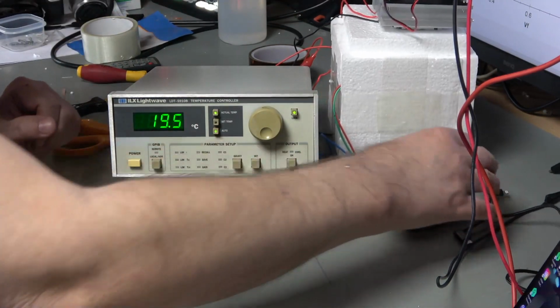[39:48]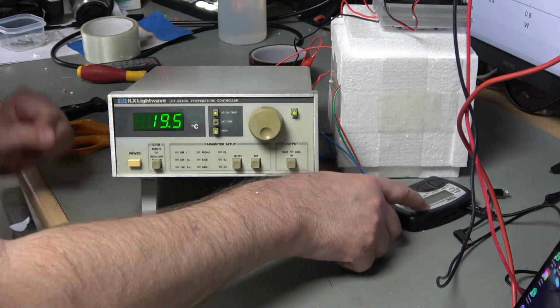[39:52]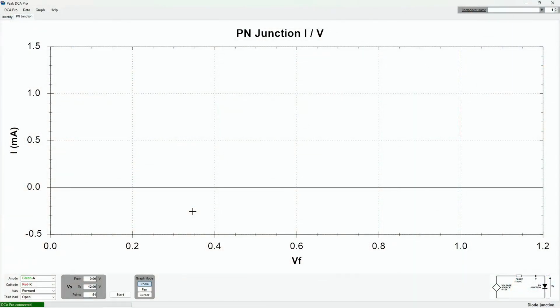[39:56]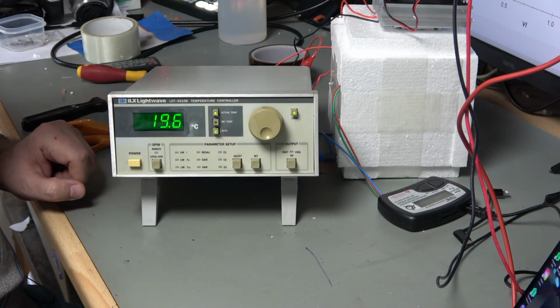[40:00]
So at the moment we're just measuring the temperature inside that box, and hopefully we can move that temperature around a bit. On here we've got my little component tester. Now the bonus with this component tester is that if I switch screens, it connects to the PC, and we can actually plot a graph. Okay, we are ready to go, I think.
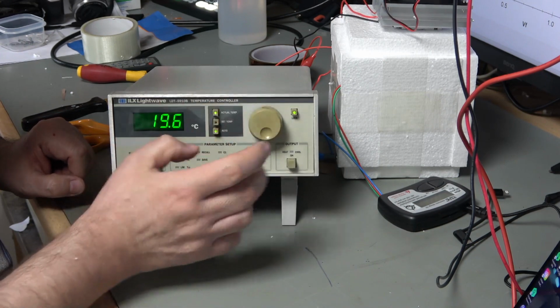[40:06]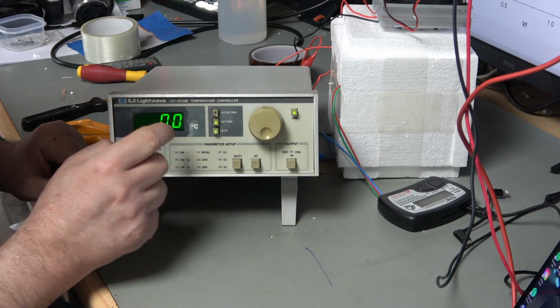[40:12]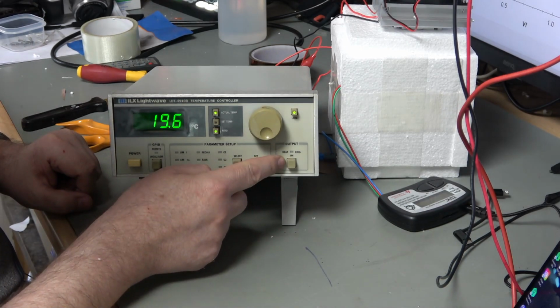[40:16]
So the output of this is connected to the thermoelectric device. It's measuring the actual temperature at the moment. Let's do a set temperature. So I've got a set temperature of 0, so that's going to be interesting. See if we can reach that. And here's our active cooling button here. So I'm just going to turn it on, and it will switch to cooling.
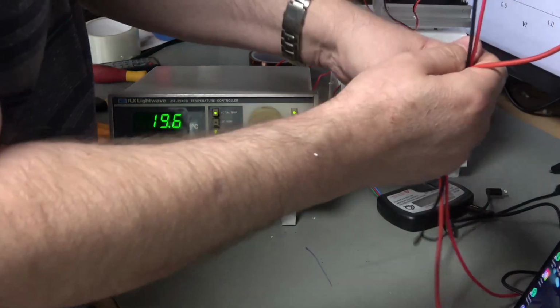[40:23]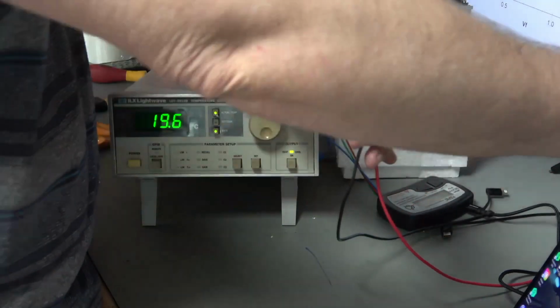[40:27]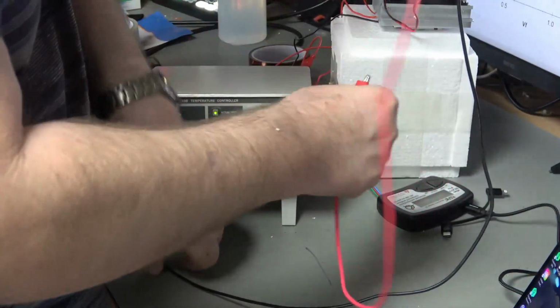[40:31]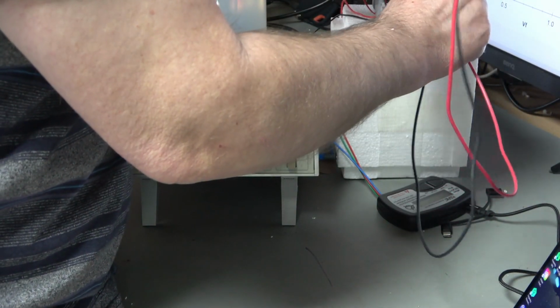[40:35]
And while I'm doing that, I'm going to connect up a couple of cables to run my fans, because it's not going to cool the inside of that box very well without any moving air.
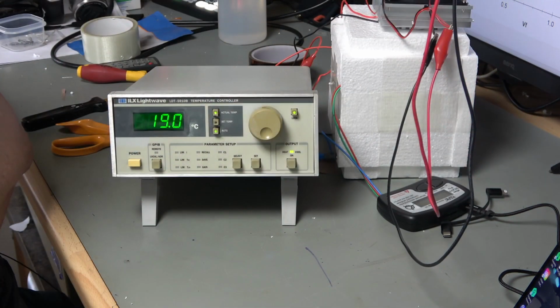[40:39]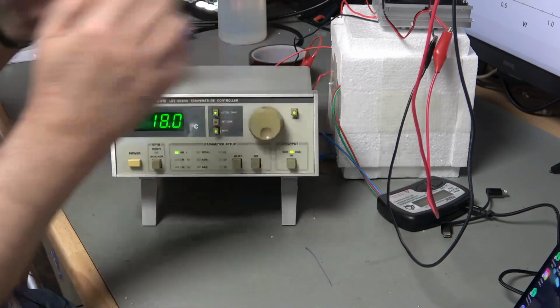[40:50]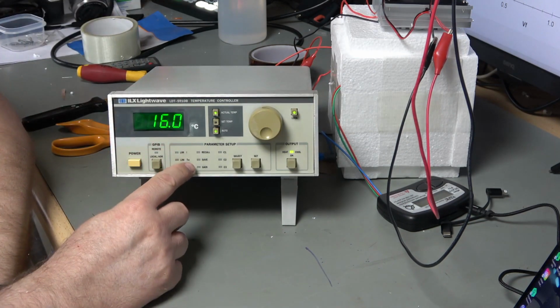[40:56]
So there we go. Our temperature is dropping happily. Let's see how far down it goes. This is not, of course, the best of compartments, but fingers crossed. This is helping it. Now this, you hope to obviously just hear, LIM I is flashing. That indicates it's attempting to cool as much as it's allowed.
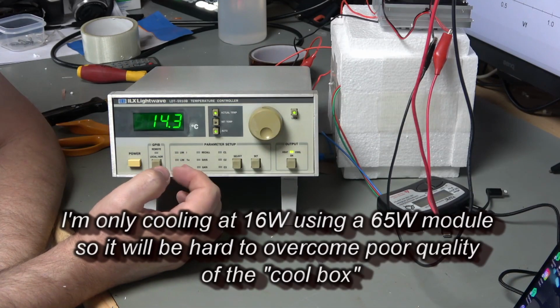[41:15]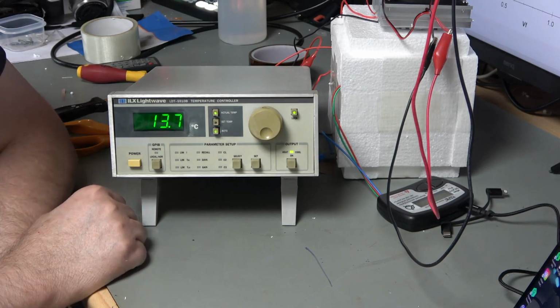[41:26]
So I've got the current limit set to 4 amps on this, so it's pushing 4 amps through that thermoelectric unit, and that's the maximum it will be allowed to go. So it might be that we don't get to 0 degrees, but we'll see. It'd be good if we can. And then what we'll do is elevate it to 10 degrees, 20 degrees, and so on. I will, of course, cut some sections out of the video so it's not too tedious for you.
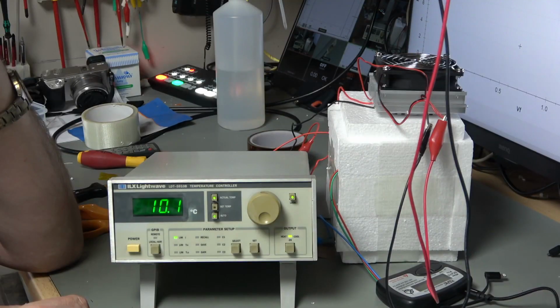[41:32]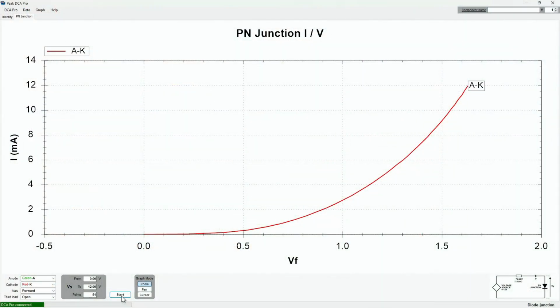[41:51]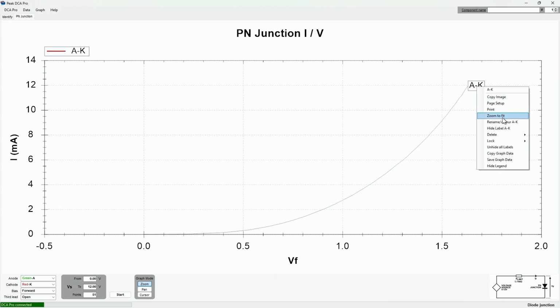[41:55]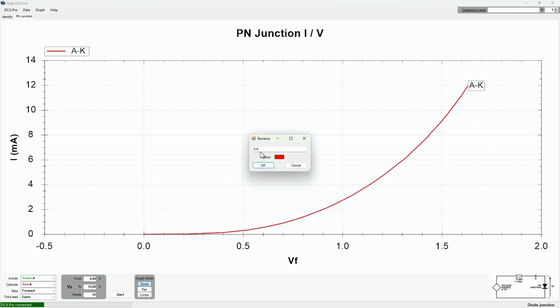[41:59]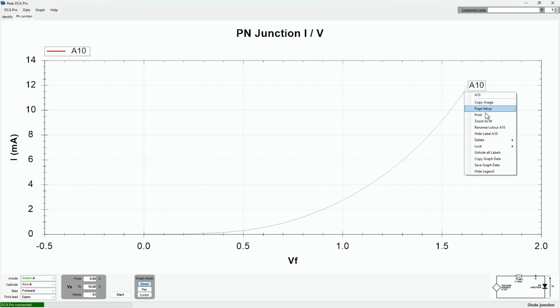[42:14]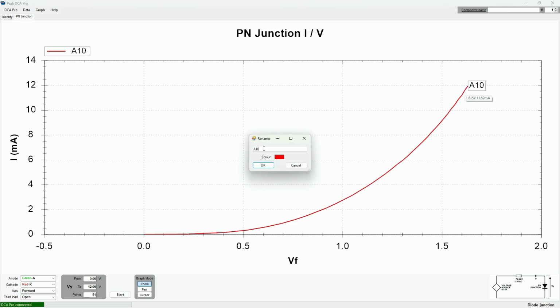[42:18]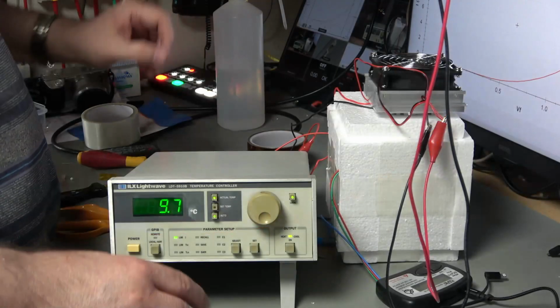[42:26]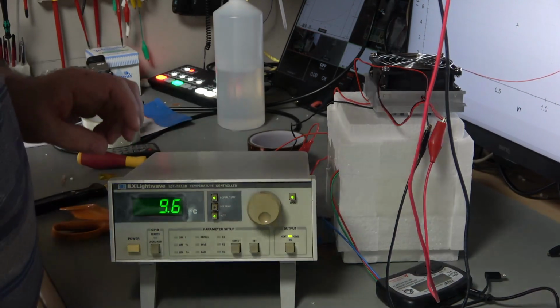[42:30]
So we've reached 10 degrees, which is actually one of the points I want to test. So I'm just going to run a test on that now while it's there. Why not? And there we go, there's our curve at 10 degrees. So I'll just change this label to 10. Not A10, just 10. So I'm just going to leave this to try and keep cooling, see if we get to that magic 0 or not.
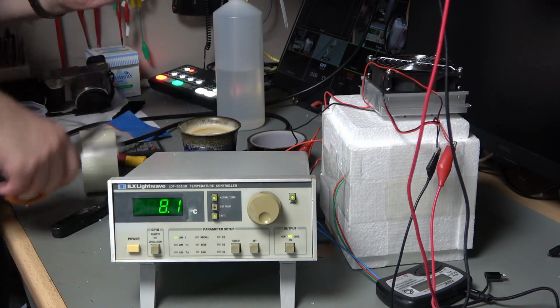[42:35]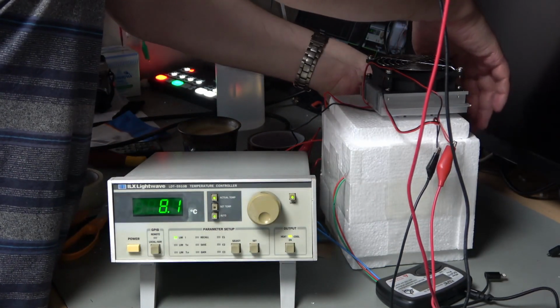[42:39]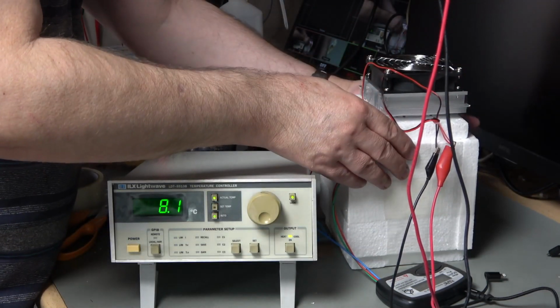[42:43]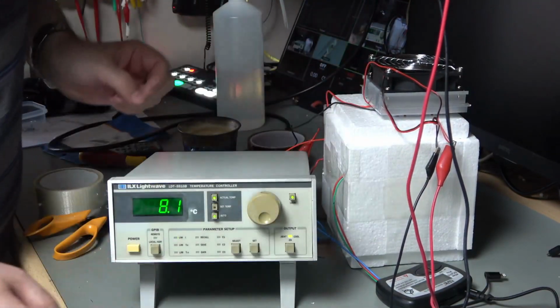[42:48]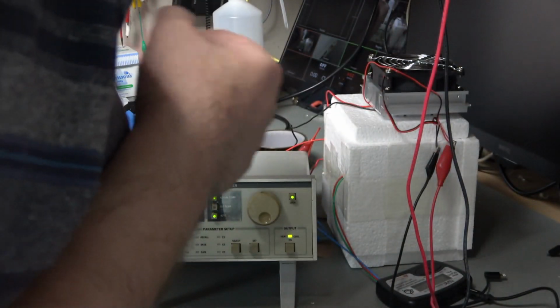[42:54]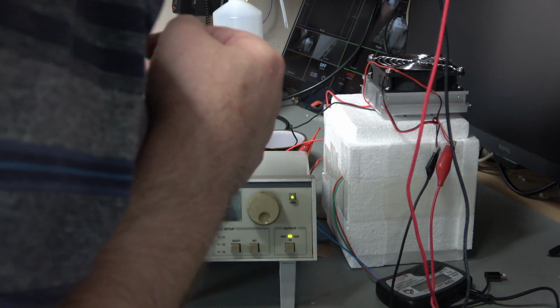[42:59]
Okay, I seem to have reached equilibrium at about 8 centigrade, and I need to go a fair bit lower than that. What I found is if I sort of press on things and close up the gaps, then the temperature goes a bit lower. So I think I've just got an equilibrium with the air leakage around this unit, and the ability of the cooler, which is running considerably underpowered. So I think overall, if I tape this up, I'll hopefully get a little bit lower.
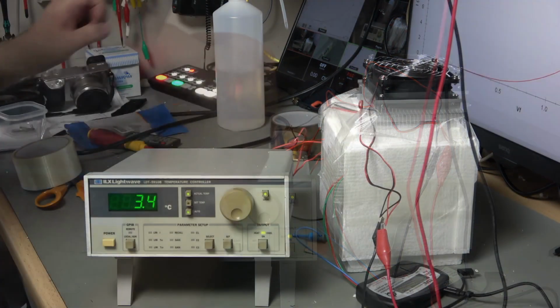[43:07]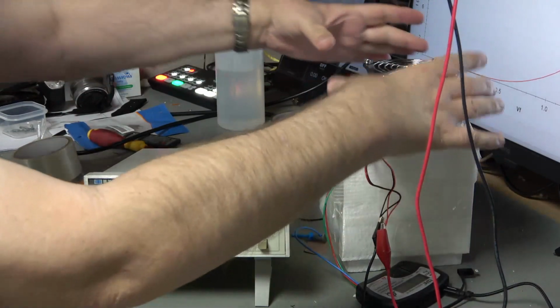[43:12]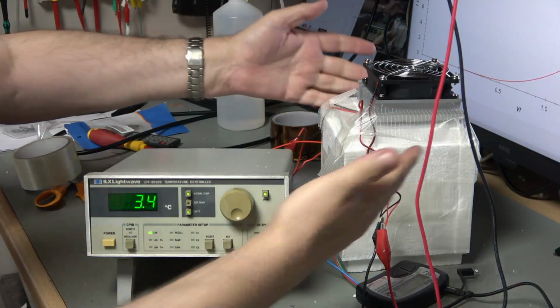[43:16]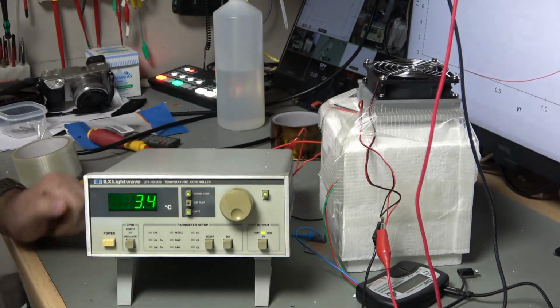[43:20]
Okay, so I have stuck a bit more tape around some of these seals and taped down the top a little bit tighter, and because it was stalling at about 8 centigrade, it's come down to 3.4 now. But I think with such a crude refrigerator, that's about as far as I'm going to get. So I'm going to just run my next test at 3.4 centigrade.
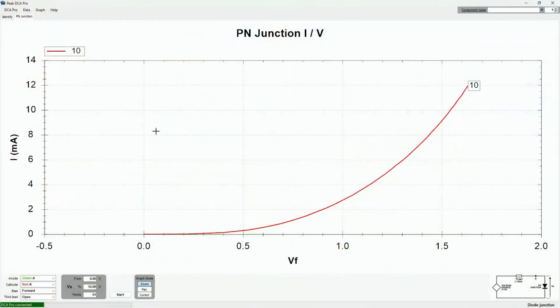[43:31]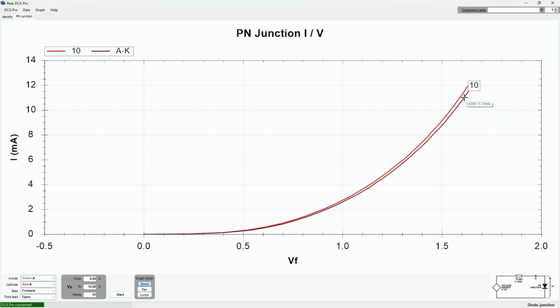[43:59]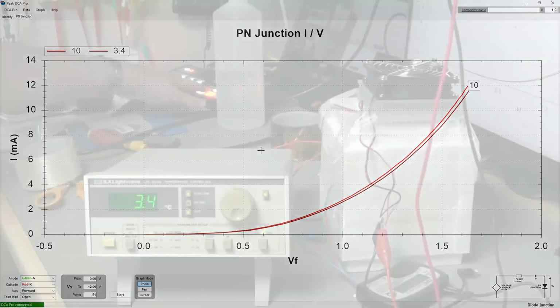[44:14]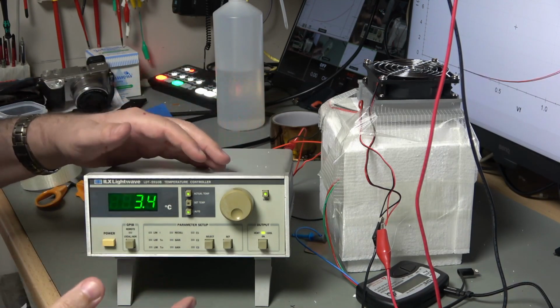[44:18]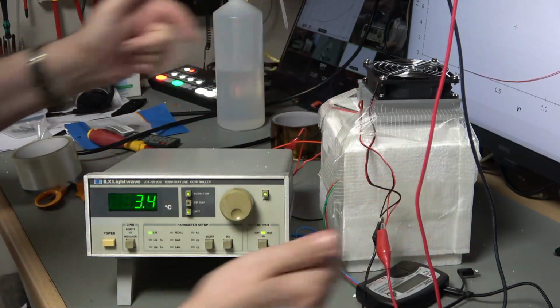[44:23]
So here we go. If there is a lot of thermal dependency, then we should be able to see a measurable difference between the curves. We're seeing a fair bit of difference there. So the red one being 10, and I'm going to just rename this label. I thought I was going to rename that label. I think I've deleted it by mistake. So this is 3.4 centigrade. Okay, so that'll do nicely. It has achieved quite a lot of cooling, but the limitation isn't this. The limitation is this rather poor quality.
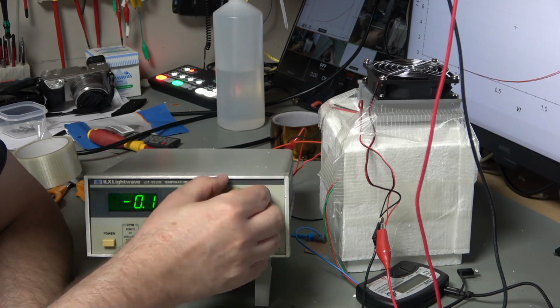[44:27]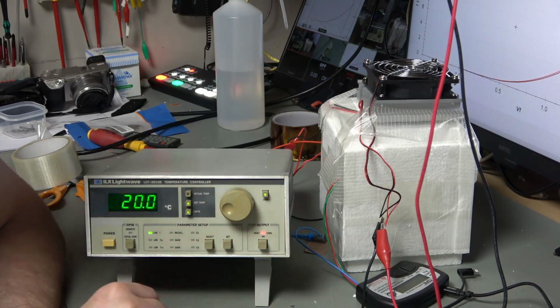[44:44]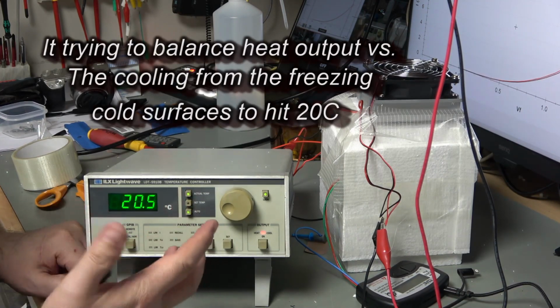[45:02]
So let's turn this now up to 20. Interesting to see how well it copes with that. So I've done 3.3, and now I'm going to do 20. Just lock that in. And we can see on here that this has switched to heating. And look at that, temperature coming up nicely now. Of course, it's in a box where the actual box itself is cool, so that is going to be cooling things off. So it stops at 20.6, so there's a bit of an overrun, 20.7.
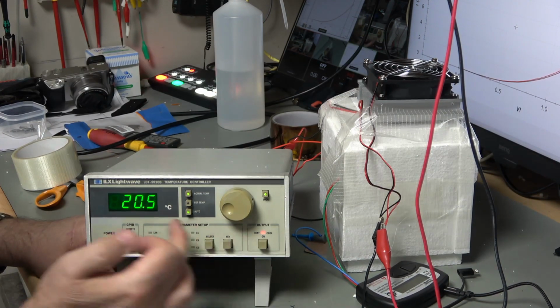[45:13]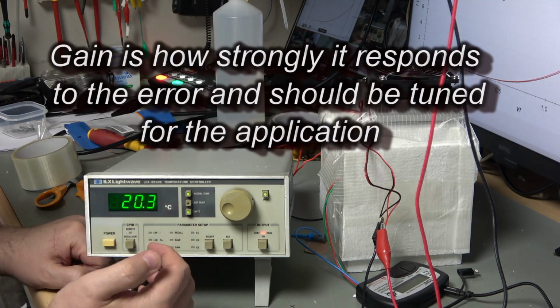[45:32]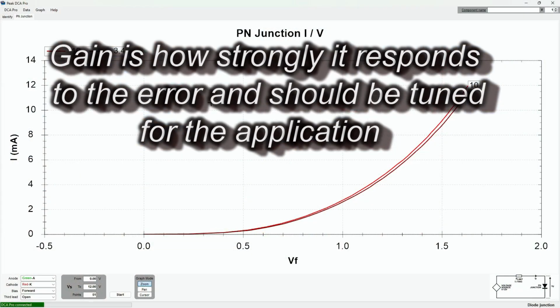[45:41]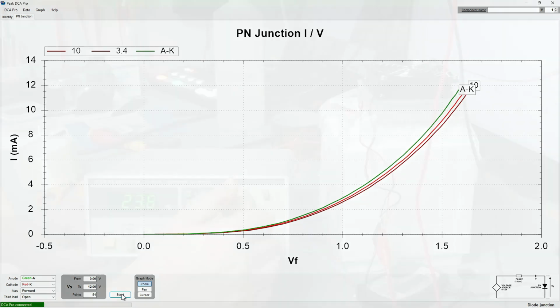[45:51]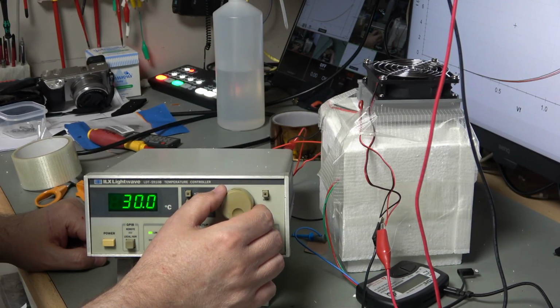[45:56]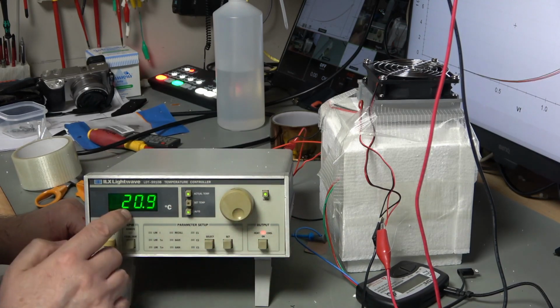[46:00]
So it is still heating, but the temperature is dropping, and that's because the surface temperature of all that polystyrene around it is, of course, quite cold and still holding that temperature down. So let me get ready for when this reaches 20. If I turn the gain down, then that wouldn't have approached quite so fast and wouldn't perhaps have overshot so much. But you know, that's pretty decent. I'm not too worried about that. To 30. And there we go. Temperature 30, and of course we should see it heating now fairly swiftly.
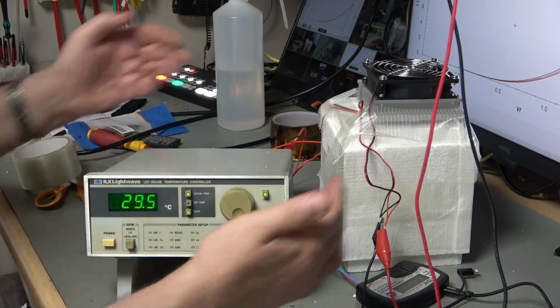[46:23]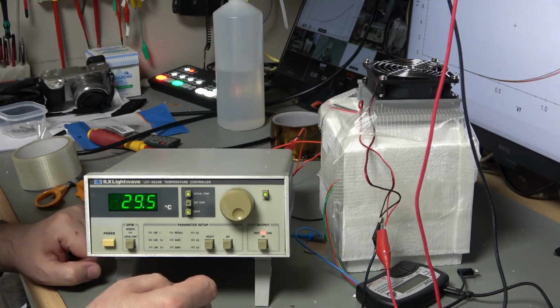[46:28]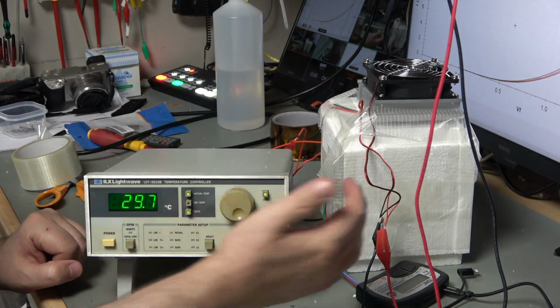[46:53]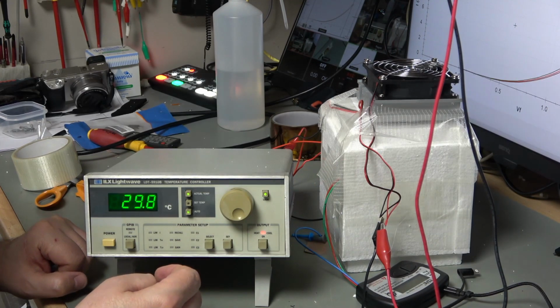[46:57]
So working well. So it's actually heating, but it is losing temperature, and it's either leaking air to the room or the surrounding polystyrene is so cold because it's been held at sub 5 degrees for an hour or so. So it's just working on it, just trying to recover without going over the top. So you can see the recovery is really slow, it's really tiptoeing around there, but it's still applying heat and it's barely gaining temperature. But as I say, that's because that expanded polystyrene around everything is at fridge temperature at the moment still. I mean, it'll warm up fairly soon.
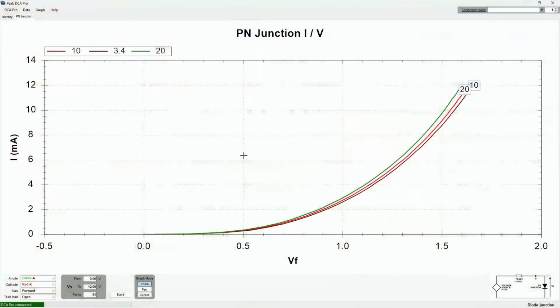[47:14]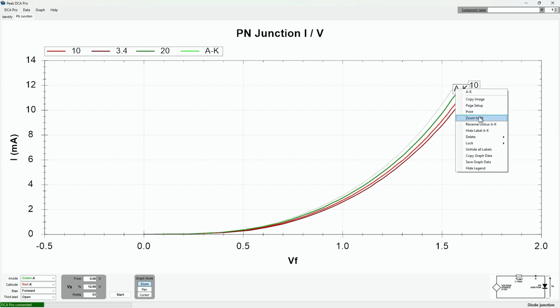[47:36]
Okay, so let's get ready and I will prepare for my next reading. So if things go as they have so far, we should be seeing another reading to the left of this one. And there we have it. Nice. And we'll just rename that.
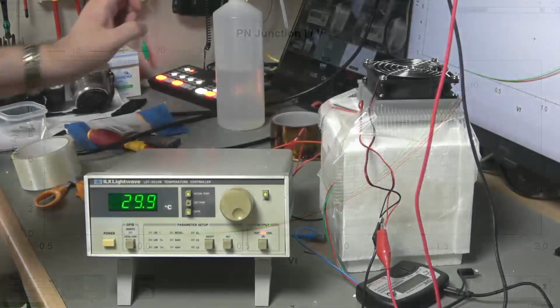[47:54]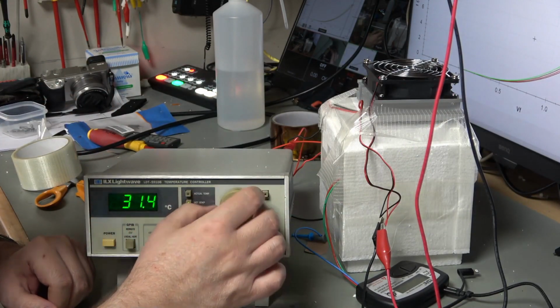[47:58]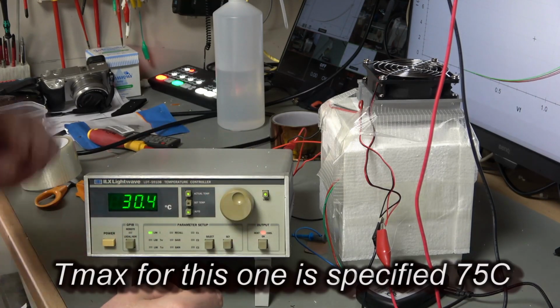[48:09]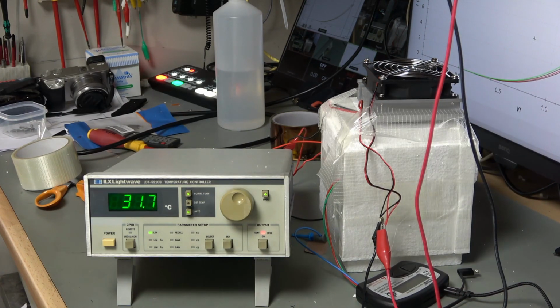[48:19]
To 30. Okay, so now let's give it a bit harder work to do. And we'll wind up to 40. I'm going to leave it at 40, that will be my highest one, because I don't actually want to damage my cooling device. I'm sure we'll go a bit higher than that, but I don't want a surface sitting at 60 centigrade or something like that.
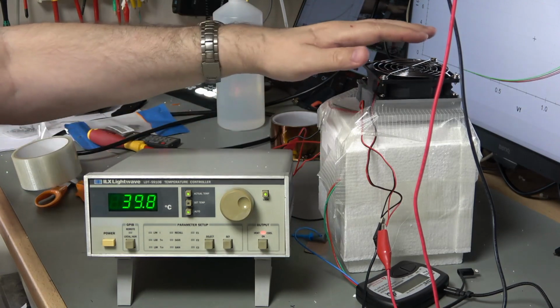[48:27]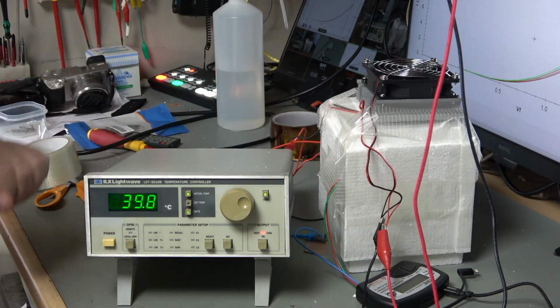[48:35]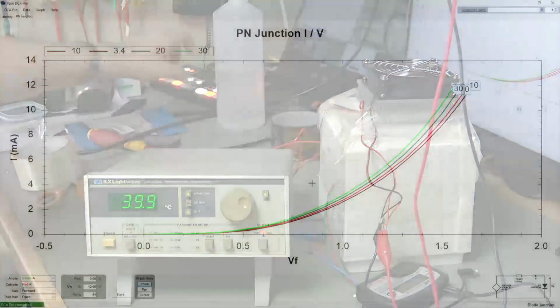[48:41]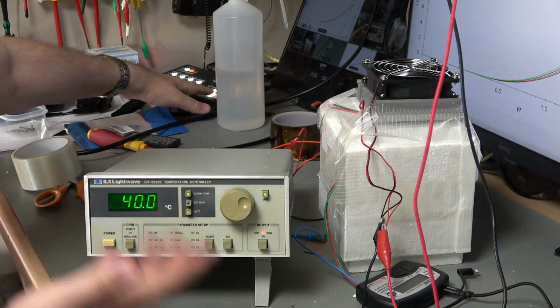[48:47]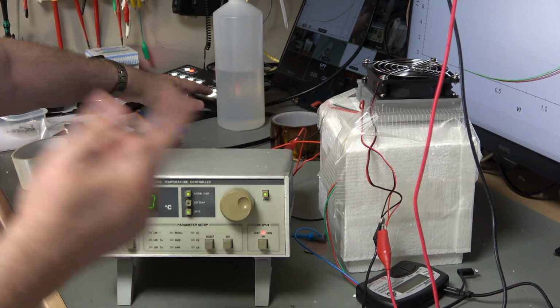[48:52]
Okay, so it is actually struggling to reach its 40 centigrade, and again, not really a reflection of this, but a reflection of my construction over here. I'm going to take my reading at that point then. 39.9. 40. There we go. So that's handy. So I'm expecting it will hang around pretty much at that, maybe 0.1 either side. But let's run my 40 degrees. There it is.
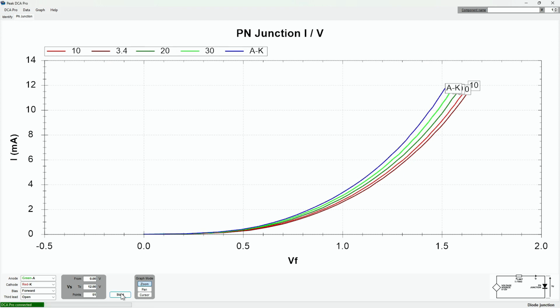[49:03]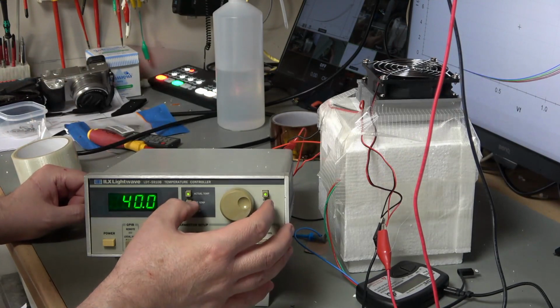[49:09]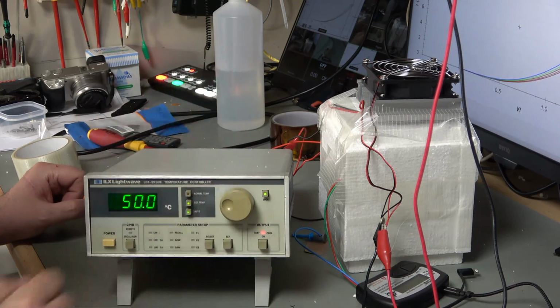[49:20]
And I very much doubt my ability to get this to 50, but we'll give it a go. So we're throwing out as much heat as we can into this compartment at the moment, but I think it's just not going to cut it really. Some difficulty keeping it there because look, I'm very close to it and I'm still running at full power again. The temperature just dropped off a bit and it threw a bit more power in to try and help it along. 49.8. Okay, 49.9.
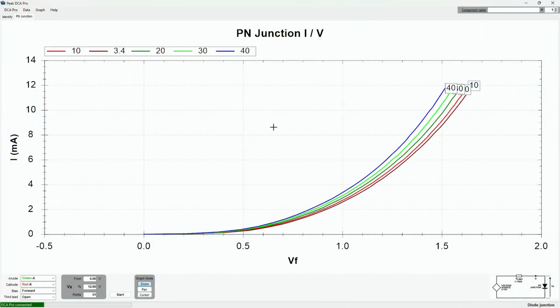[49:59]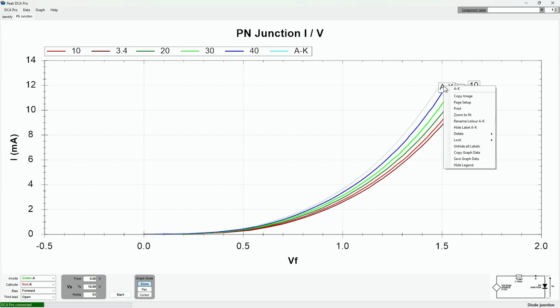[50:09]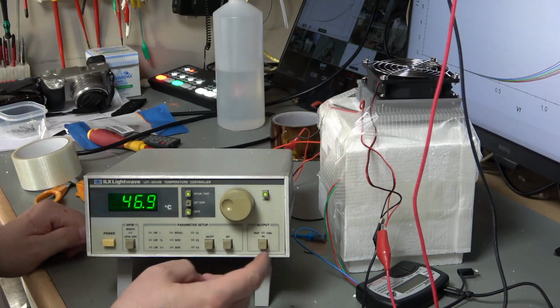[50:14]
So the casing is heating a little bit more, so let's switch across and take our measurement. And that's a very, very faint line, but it is there. I'll change its colour in a second. Okay, so there you go. I've turned the output off. So once you turn the output off here, it's actually safe to do things like connect and disconnect things, so that's really helpful without disconnecting the whole thing.
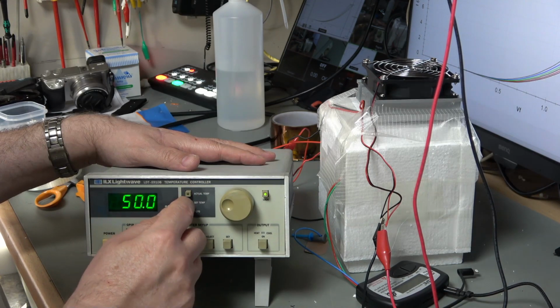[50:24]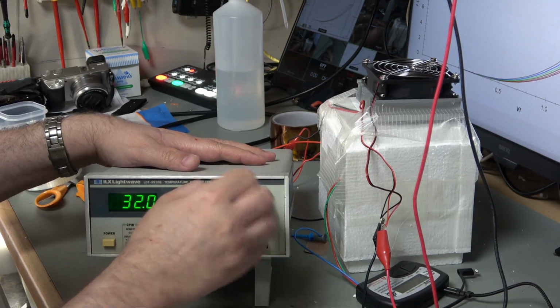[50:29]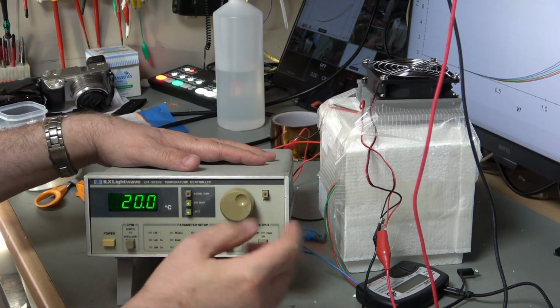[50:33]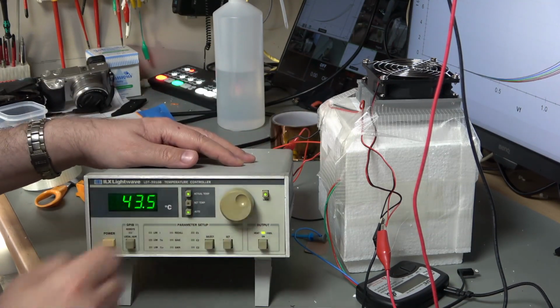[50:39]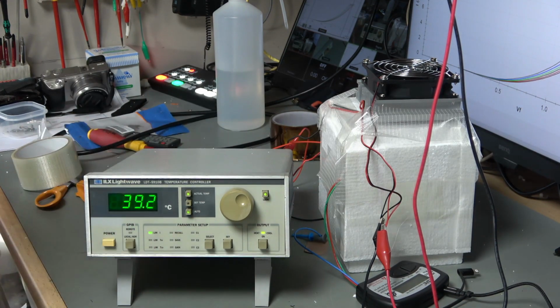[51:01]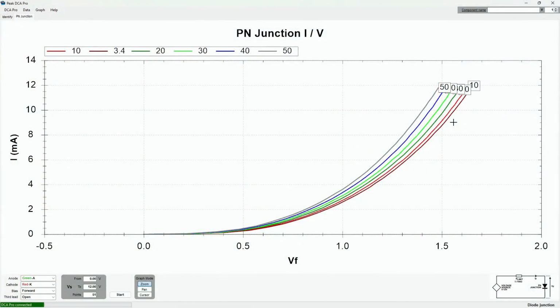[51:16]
But what I could do, of course, to bring this down to close to room temperature is reset the temperature to, let's say, room temperature-ish. That's met at about 20 degrees, that'll do. Okay, and it's doing nothing at the moment, it's just cooling naturally. We'll turn that on and see if that speeds things up a bit. There we go. So now this should come down fairly rapidly to the 20 degrees and actually sort of hold it around about that temperature. As we give it more time and as we tune the gain, then we'll be able to make it stable. Anyway, in the meantime, let's have a look at our experiment result.
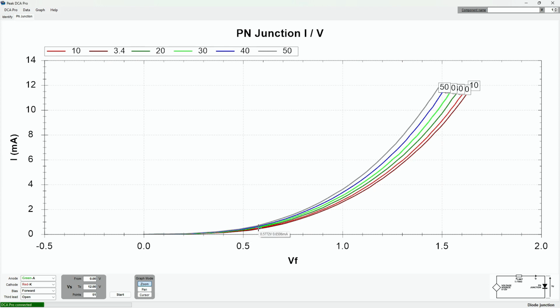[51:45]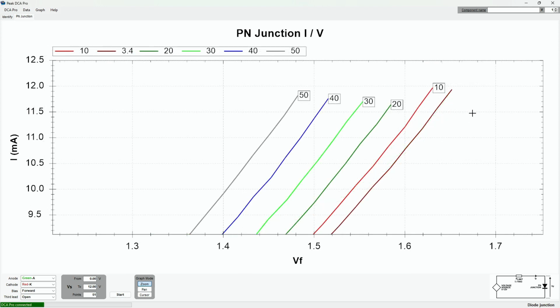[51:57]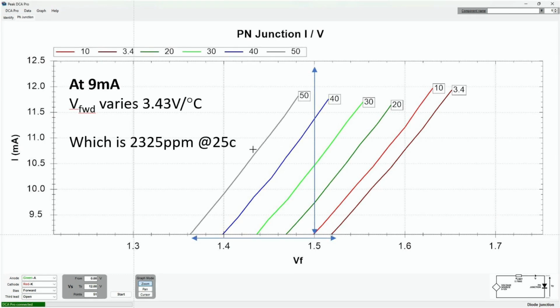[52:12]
Okay, I've dropped a couple of lines onto this, a couple of arrows, and done a few calculations just to try and make things a little bit clearer. So looking at the baseline on this graph, we've got a forward current of 9 milliamps, and our forward voltage drop though varies quite a lot. So it varies between 1.36 volts and 1.52 volts, thereabouts. And I've done a bit of maths, and that works out at a variance of 3.43 millivolts per degree C. I've written volts per degree C on here, and that's wrong, of course.
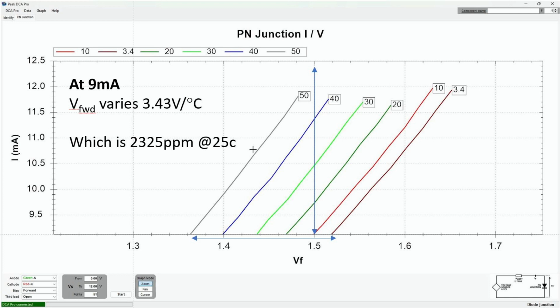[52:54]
Now we can also look at it on the vertical, and we could think about keeping forward voltage the same at, say, 1.5 volts. And we can see on the graph that that will vary between about 9 milliamps and 12.5 milliamps. So that's quite a lot. Now, if we look at voltage forward drop at a common temperature, so let's say 20 C, I've written 25, I meant 20, we get a 2,325 parts per million temperature dependency on this particular device. So hopefully that was quite interesting.
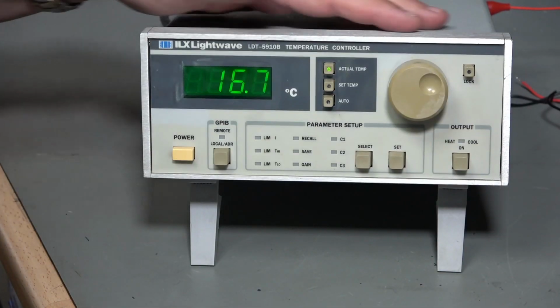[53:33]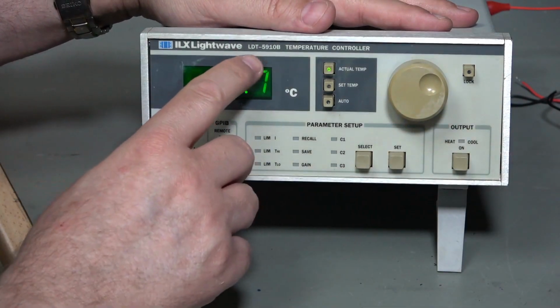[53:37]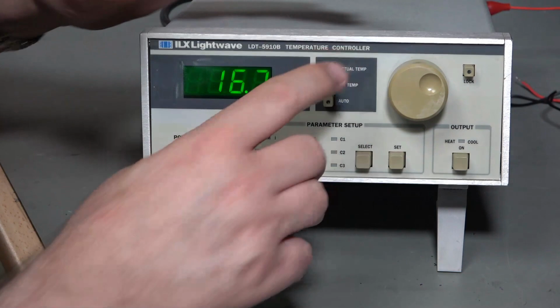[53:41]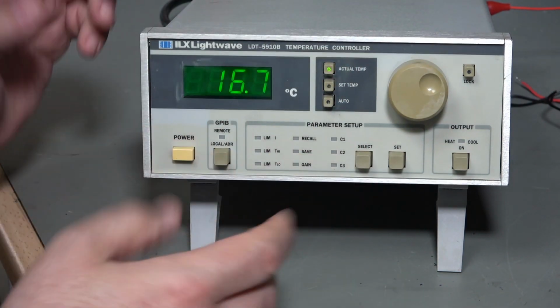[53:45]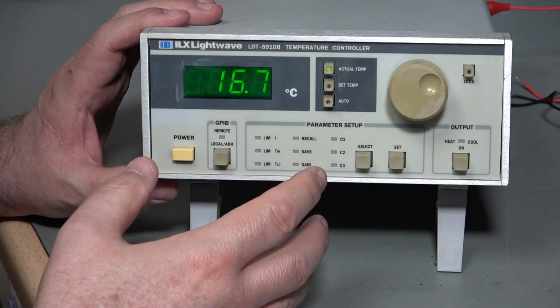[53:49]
So there we have it, a fully working device. I had to completely rebuild the power supply, of course, but it wasn't anything advanced, and buying a suitable transformer was far better than trying out some sort of bodge with multiple small transformers. Now, although crude, my little experiment hopefully showed it in action and was quite interesting.